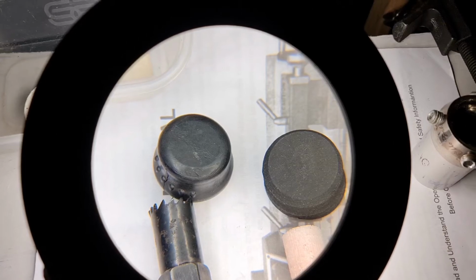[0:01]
If you watched my previous video, part one, on making a prosthetic replacement leg suspension part, you'll know that I did some 3D printing to replace some parts in a rotational and vertical suspension unit. Today, I'm going to use one of the parts I 3D printed for that unit in a different unit to see how what I'm doing affects the suspension. So if you watched part one, you'll be used to looking at things through my lighted magnifying glass.
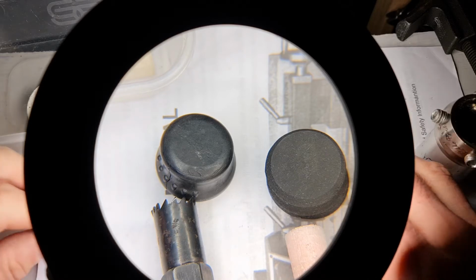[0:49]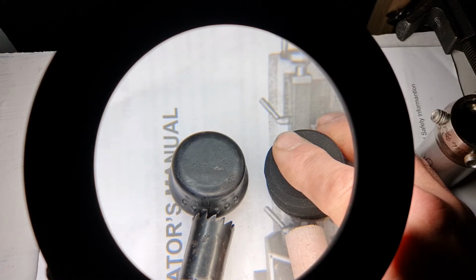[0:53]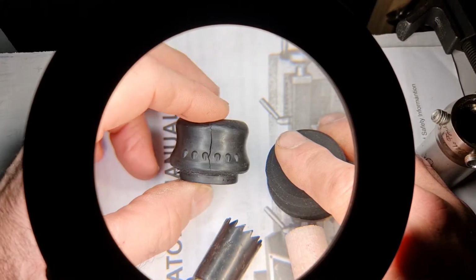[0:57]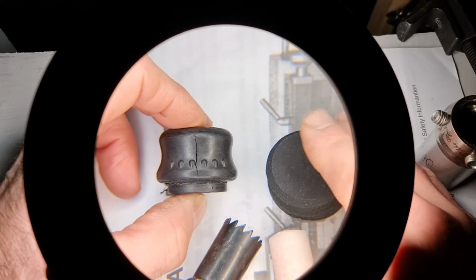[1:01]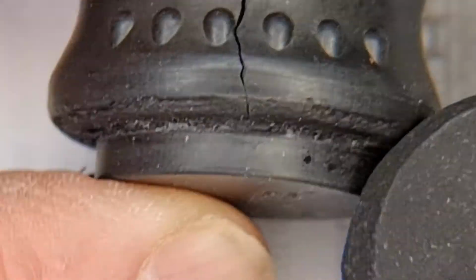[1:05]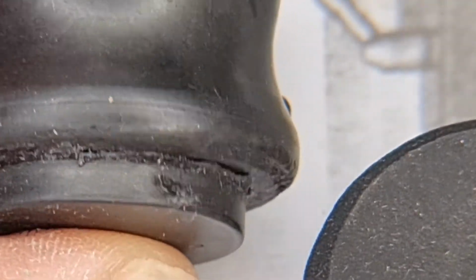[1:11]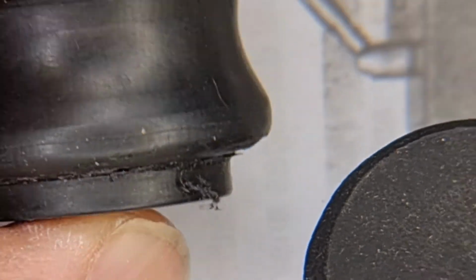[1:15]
So here we have the suspension unit that I'm going to replace. You'll see that there's quite a crack in there. So what's happened is obviously over time the rubber has worn. We'll do a close-up of that. You can see there's quite a big crack in there. Not too much other damage. There's a bit of damage here and there, just surface damage though.
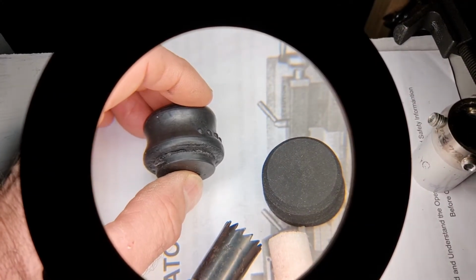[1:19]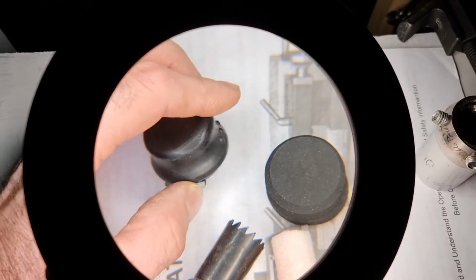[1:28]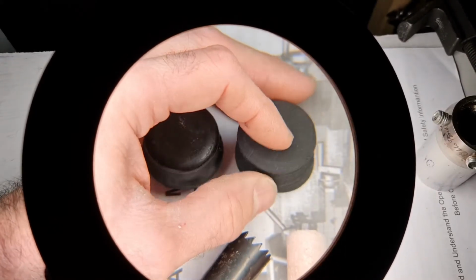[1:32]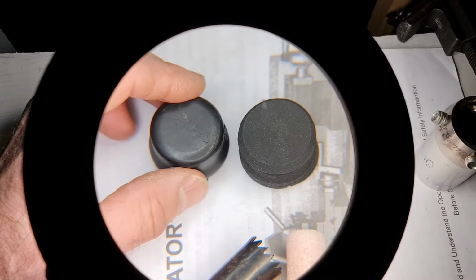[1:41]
So what we're going to do is use my new lathe that I've purchased, and I did a quick review video on. We're going to cut a new one of these rubber inserts out of some thick rubber that I've got off Amazon. This is the first prototype, which I'm just going to do some experiments with. I'm going to show you how I cut that out of the block. We'll just go over to my drill and do that.
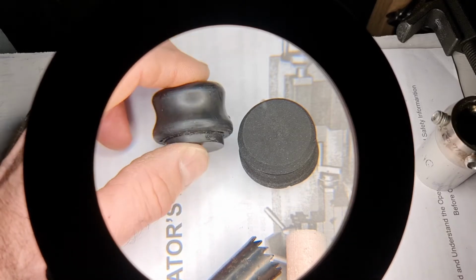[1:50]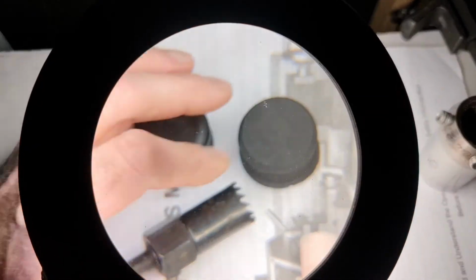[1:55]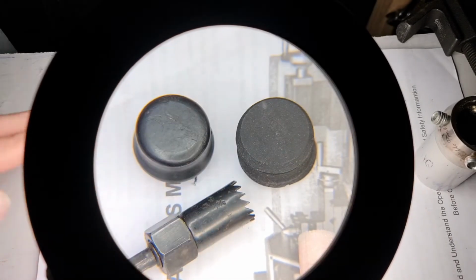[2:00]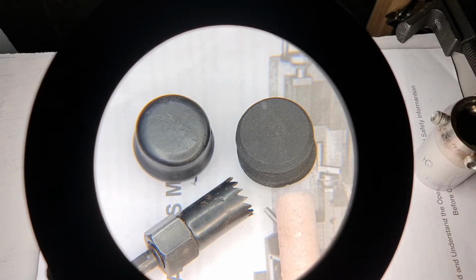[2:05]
Okay, so the idea is to replace this and do a few experiments. What I'm basically going to do is core drill the middle of one of these replacement rubber units and put in my suspension unit that I made in the last video using my 3D printer. That's got plastic on the outside, flexible plastic, NinjaFlex, and this particular one's got silicone inside as a damper unit, but I've actually decided to use caravan glue as a damper unit. On the previous video you'll see that.
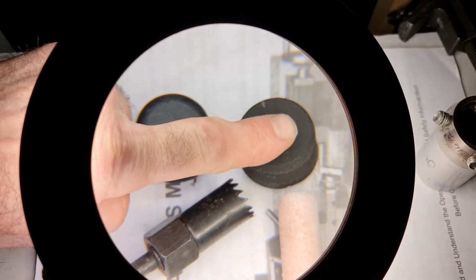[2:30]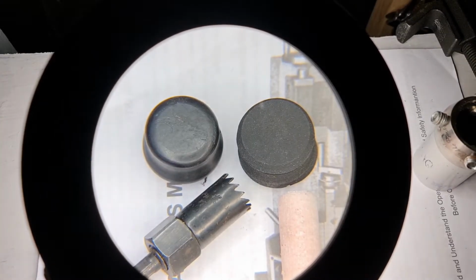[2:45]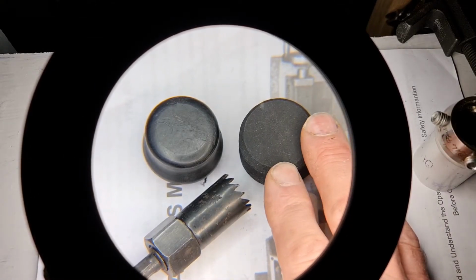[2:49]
So that's the plan, is to put the core drill through the middle of this. I think I'll go straight through so I get a full use of the suspension plastic suspension unit inside. And then I'm going to just seal that in probably with some more caravan glue and try it out. So first of all, I've got to obviously cut out another one of these, as I said. I'll do that on the drill now. I'll probably do two or three actually, since I'm there.
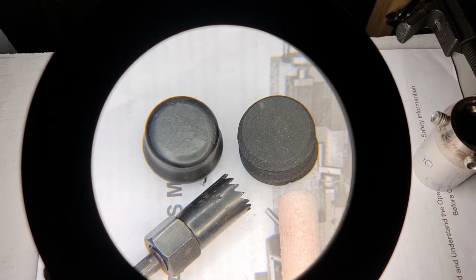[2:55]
I'm going to wear a face mask for all of this because the dust on this rubber apparently is not very good. It could be quite harmful, I think, with prolonged exposure. And I will be creating some dust both on the lathe and on the drill, so I will be wearing my mask, and a good one.
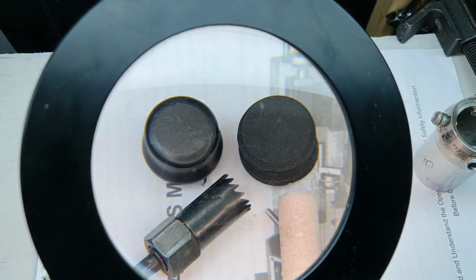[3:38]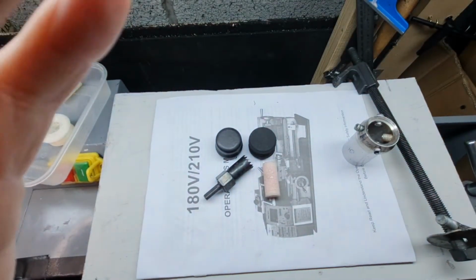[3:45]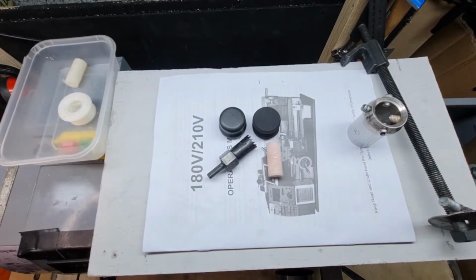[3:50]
Okay, so those of you that watched my lathe video, you'll remember that I found for the chuck guard there was a peg that came out, and I was going to remove that, but I've actually found a use for it. I'll just show you. So this is now my little lathe table that I've got on top of the lathe for YouTube, so I don't have to mess about and go elsewhere. Nice little table here. I can just do my shots on.
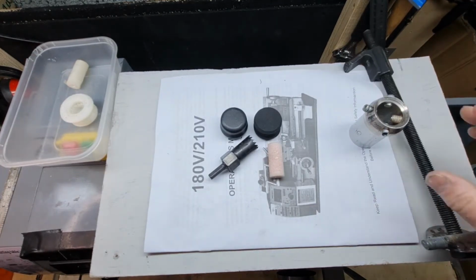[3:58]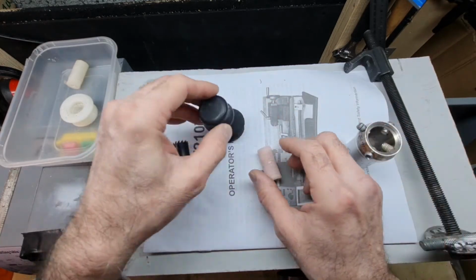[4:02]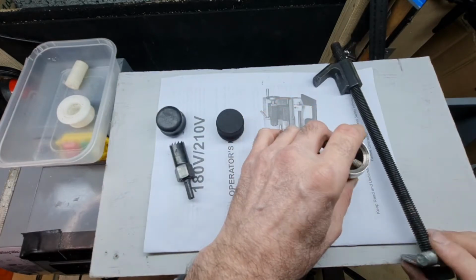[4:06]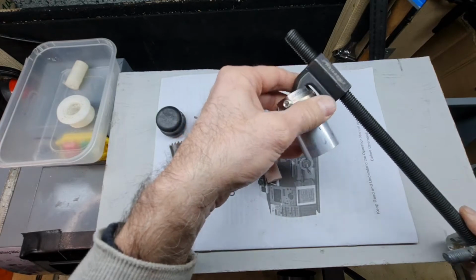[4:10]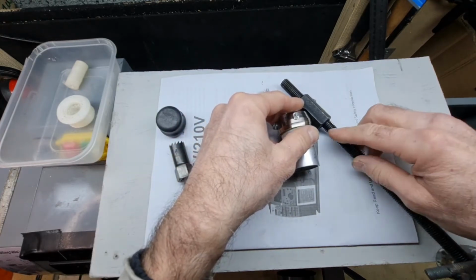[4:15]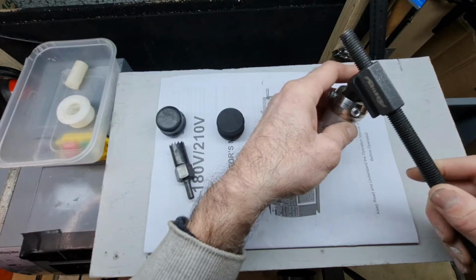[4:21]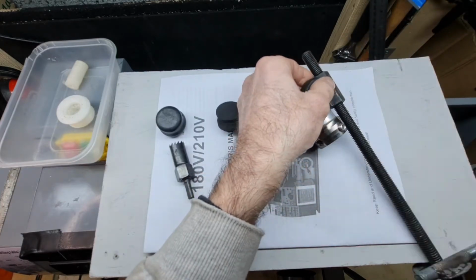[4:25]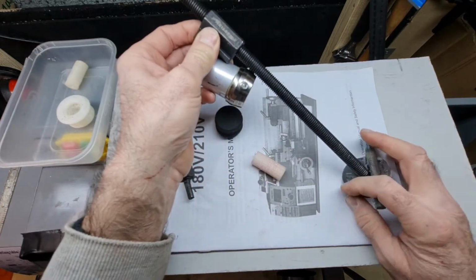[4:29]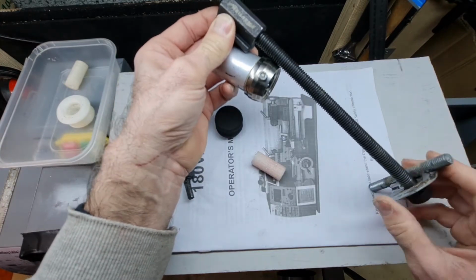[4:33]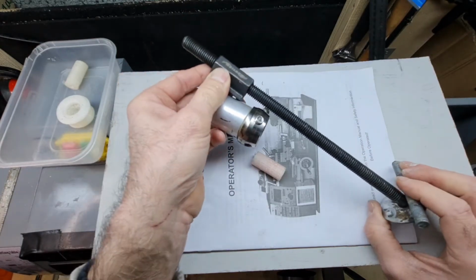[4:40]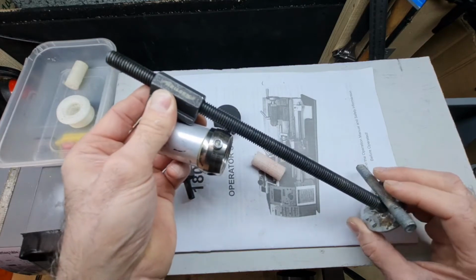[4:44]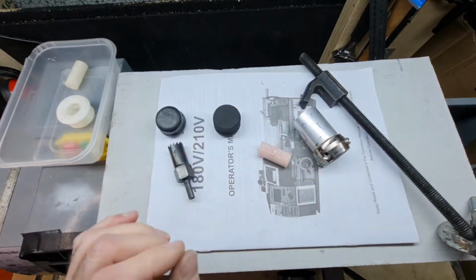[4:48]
So I'll just show you what I had to do, if anybody's interested, to get this suspension unit out of the prosthetic foot that I'm working on. I had to make up a special tool. This is basically all off eBay. Everything's off eBay. This is a spring compressor, which luckily fitted into this top unit here, which I fitted onto the foot, and I welded on a shaped washer here and a bar which fits on the other part of the shoe and foot, and I can just basically wind in and get the compression that's required from a special tool, which of course I don't have, I can't get for any price, so I've had to make my own up. Anyway, that's how I got that suspension unit out.
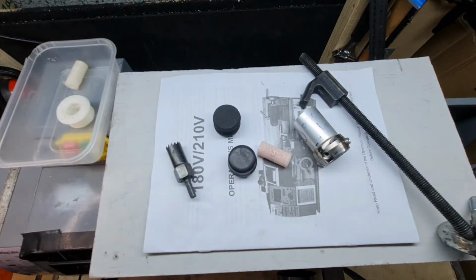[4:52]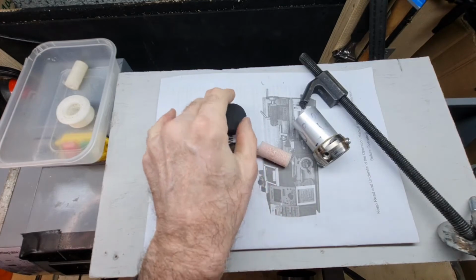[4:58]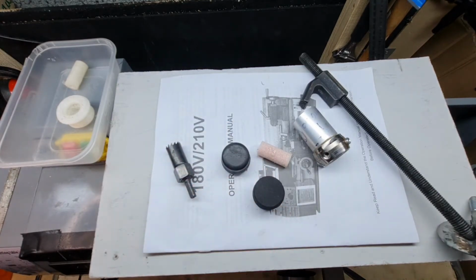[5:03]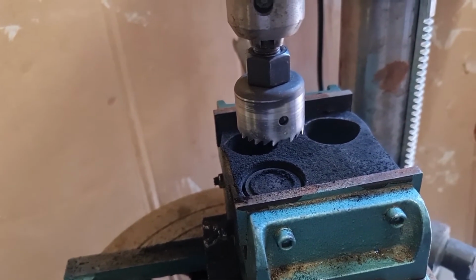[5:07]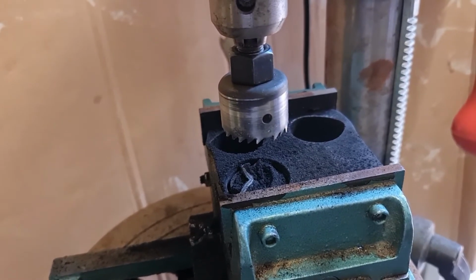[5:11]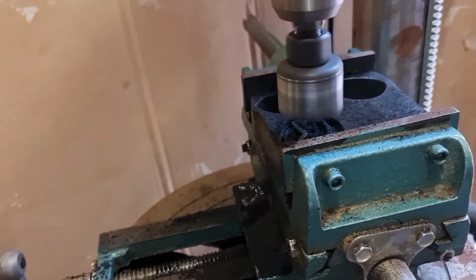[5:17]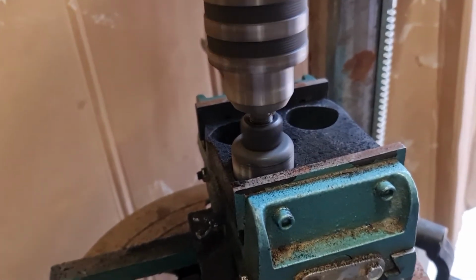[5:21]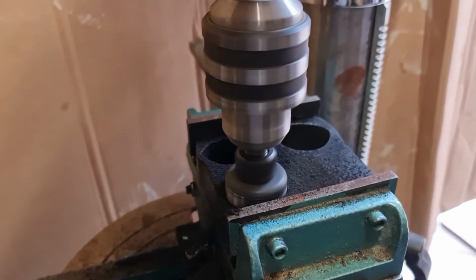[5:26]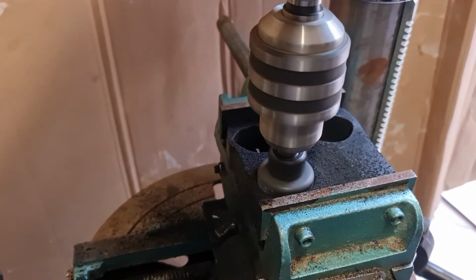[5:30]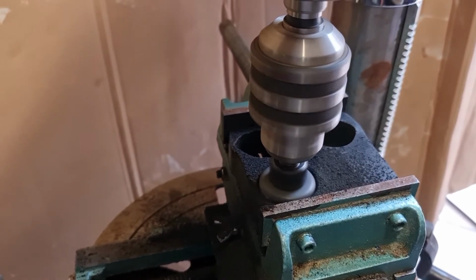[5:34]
Okay, so what we'll do next is we'll go to the drill and start core drilling some more of these practice units and final units out. As you can hear, I've got my mask on. I'm just started cutting a new billet out of this rubber block I got from eBay, so we'll just carry on with that. I'm doing it nice and slowly so the rubber doesn't burn or distort. Just very slowly, waiting for it to hit bottom.
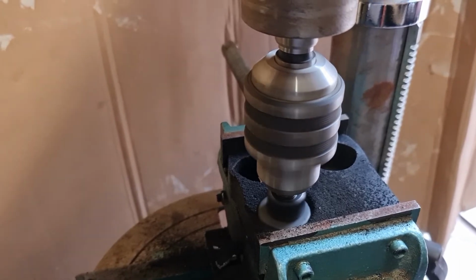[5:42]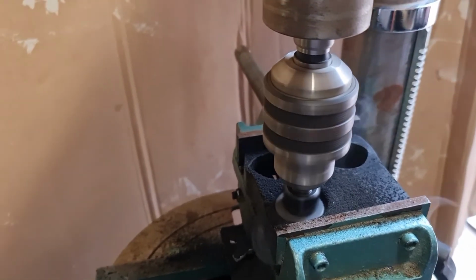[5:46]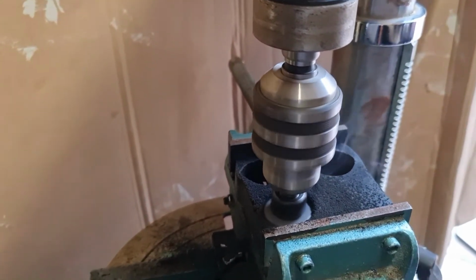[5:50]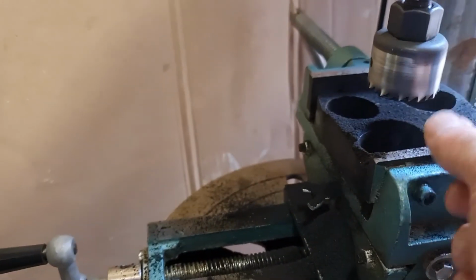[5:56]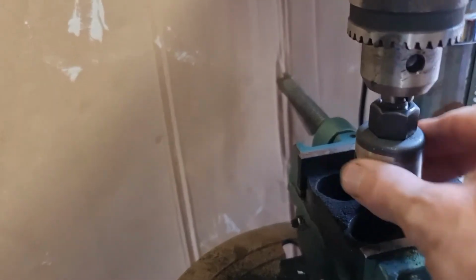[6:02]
Okay, that's it, we've hit bottom. A little bit of smoke is going out of the door. Okay, we'll come back up and switch off. So obviously the billet is now, because I've got a good clean separation, it's gone up into the hole.
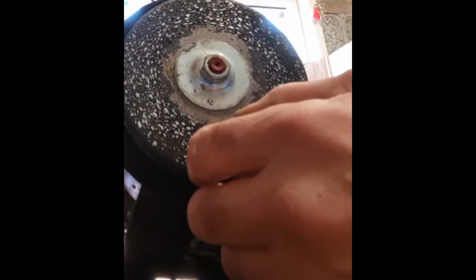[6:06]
I've just chamfered some of this off. I'm just going to chamfer a bit more off on the bench grinder because that's the easiest way for me to do this. So I've got a nice chamfer there now, which matches the original more or less. Didn't have to be totally accurate for this case. As long as I've got some chamfer, that'll be okay.
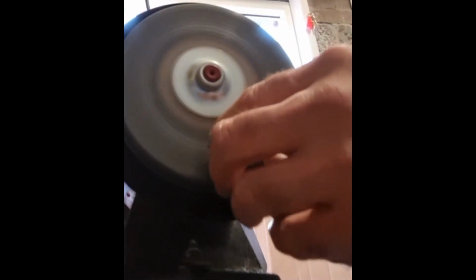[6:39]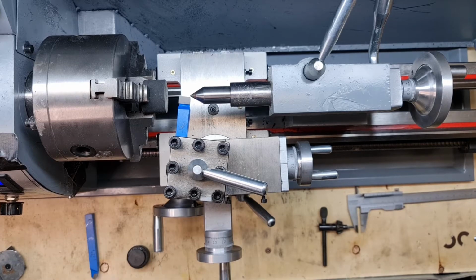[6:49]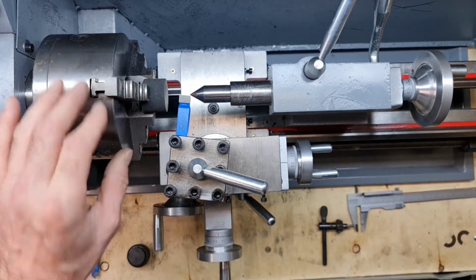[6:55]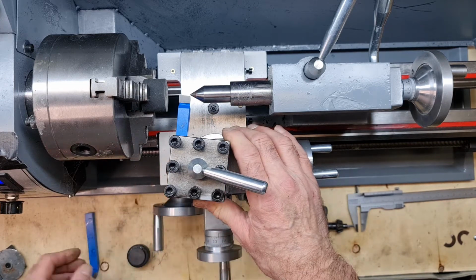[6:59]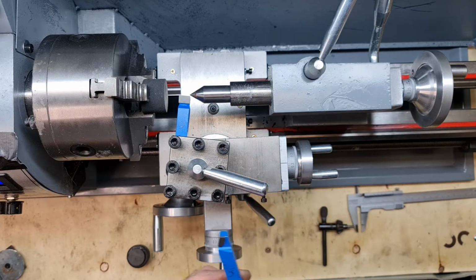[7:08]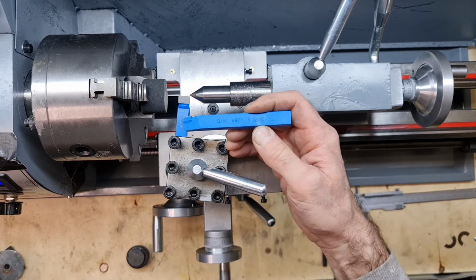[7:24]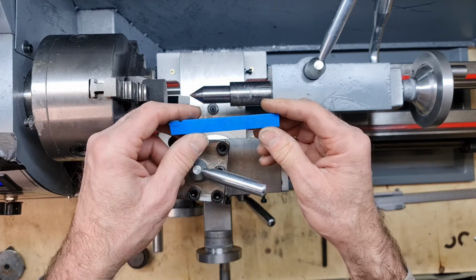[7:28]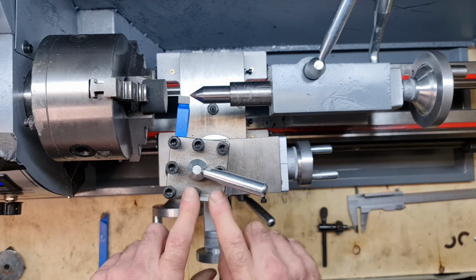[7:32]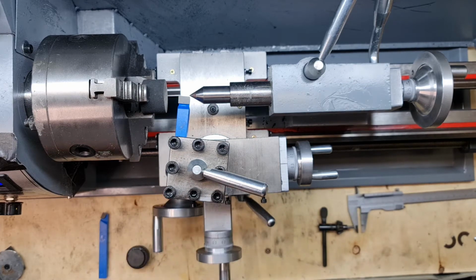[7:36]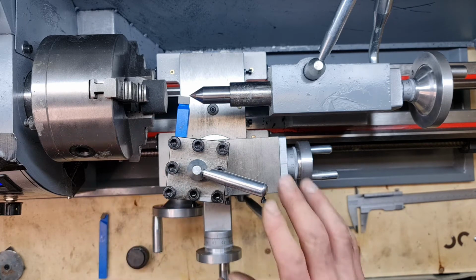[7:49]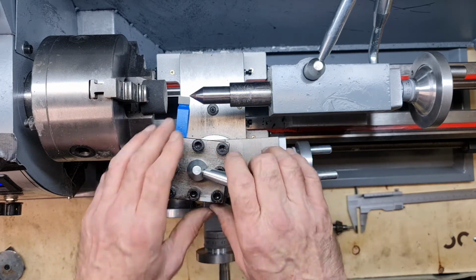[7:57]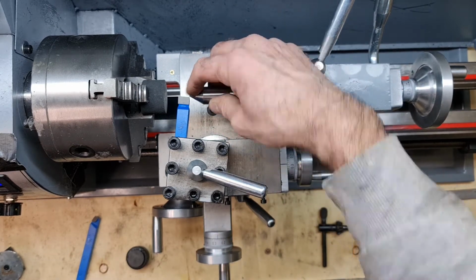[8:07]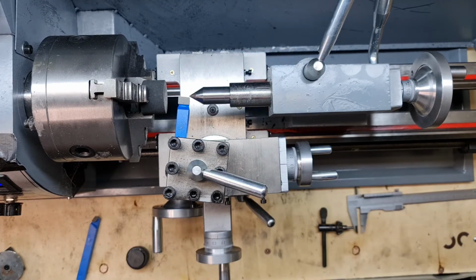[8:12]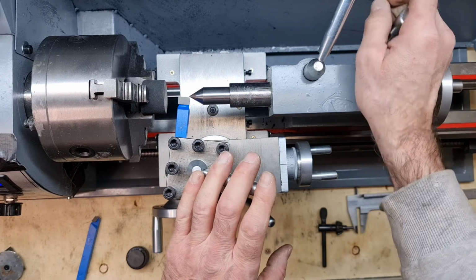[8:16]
So basically, I've had to go up now, reshim. I had to cut some new shims. So I'm now, as opposed to, I think I was just under a millimeter, 0.8 with the previous replaceable tipped tools, I've had to go up to 1.25 of a shim to put these tools in. So if you've got the standard tool post, you'll need to be looking roughly to shim around that distance to get your tool on point and at the right height. So that looks pretty spot on to the middle to me. I'm not going to get any closer than that, so that'll have to do, but it's pretty close, if not right on.
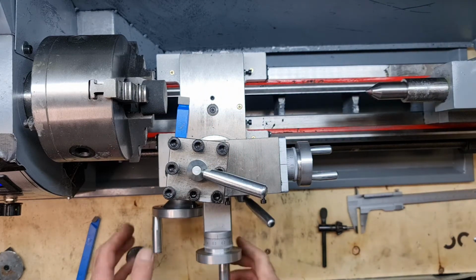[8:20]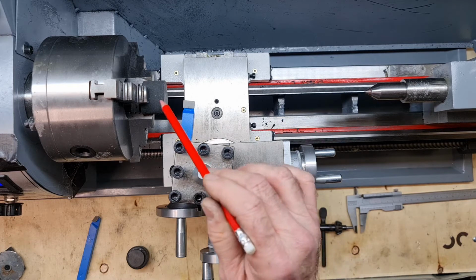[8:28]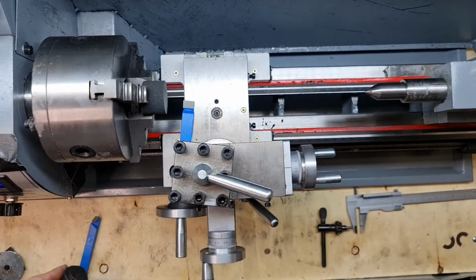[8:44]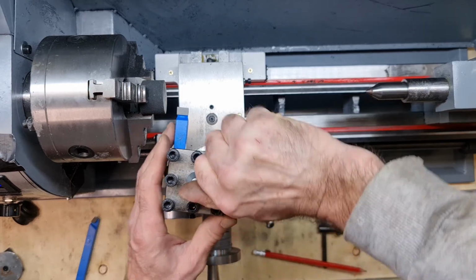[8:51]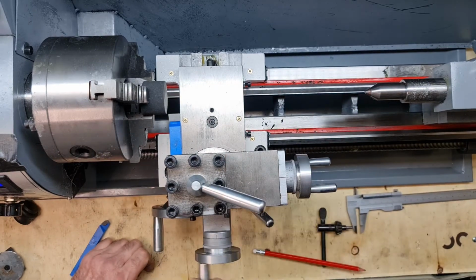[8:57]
So we'll just take the headstock away, and I've worked out that I've got to cut this. The diameter of the billet is 33.5, and the diameter of the insert that I want that goes into the suspension unit to hold it in under pressure is 25 mil. So I've got to cut 8.5 mil into this block. Now I'm not going to do that from just the dials, because I've not used these dials before. So I don't exactly know how accurate they are. So what I'm going to do is just start off, and I'll just measure when I think I'm getting close to that.
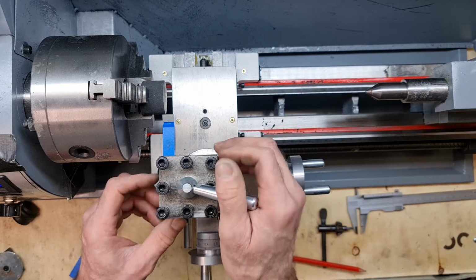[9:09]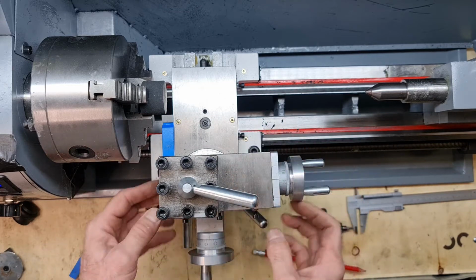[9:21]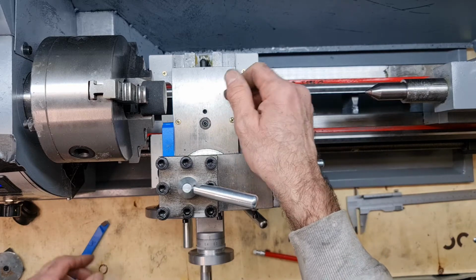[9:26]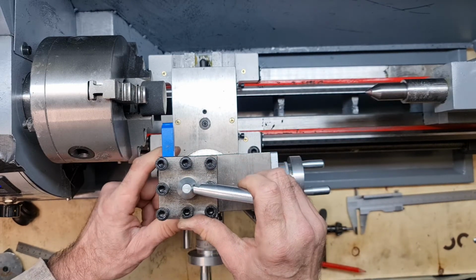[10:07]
So as you can see, I'll just explain what I've done with the tool here. I'm basically eyeballing this, because I haven't quite got the crosslide level. And in any case, I'll just show you what I did notice: I think the zero on this base is actually way off centre here, so I'm not quite sure what the point of that is. If I just get the ruler down there, I think you can see it's not really anywhere near the centre, so that dial there is a complete waste of space. So it's all going to have to be eyeballed, unless I work out a different way to do this. This side's fairly flat here. So I'm just going to eyeball this because the tool's not straight, because the cross slide's not straight. So anyway, that looks about right to me.
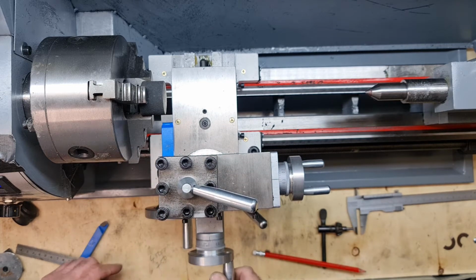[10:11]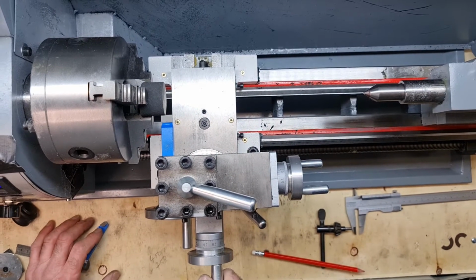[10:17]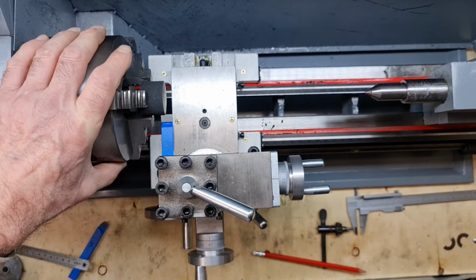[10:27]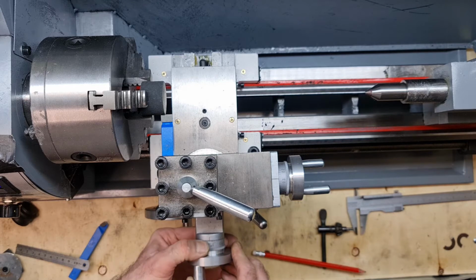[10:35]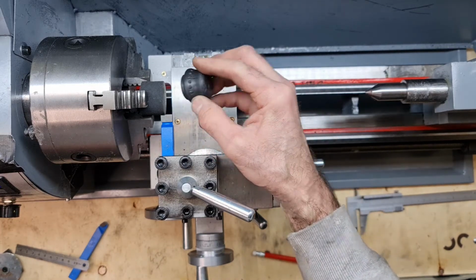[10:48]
You've probably got a better view than me. I think that's about right. We'll try that anyway, see how that goes. So I'll reset this, for what it's worth, to zero, so I've got some idea of where I'm going. Okay, so that's about right now. I'll just check everything's tight. Just check that we've got the right depth there. That is
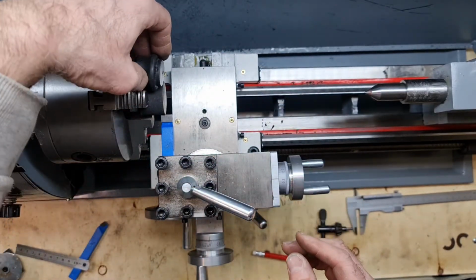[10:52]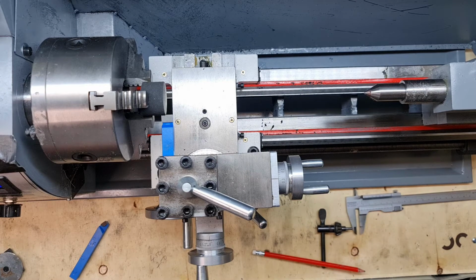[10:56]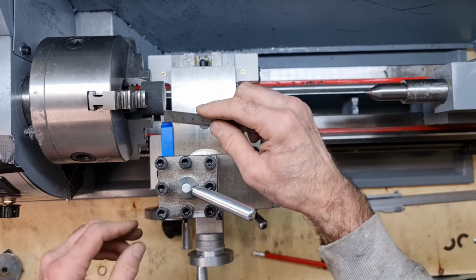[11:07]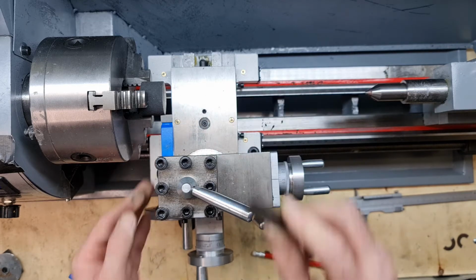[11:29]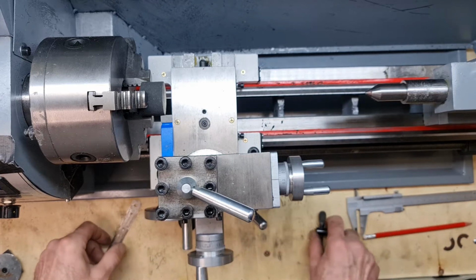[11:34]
That's 4 mil actually, so we'll just check on here. Actually, yeah, that's spot on. Good eyeballing, I think. More or less, but yeah, I would say that's spot on, actually. So we'll stick at that. I'll just get rid of this tool, get rid of all unnecessary bits out of the way. Okay, so we'll see. We'll start to roll and see what happens.
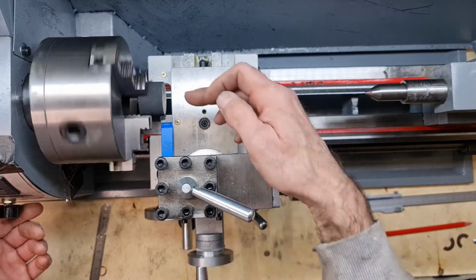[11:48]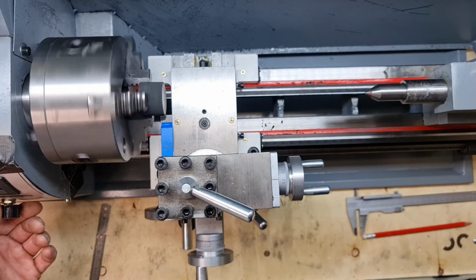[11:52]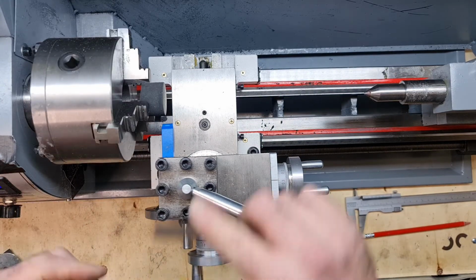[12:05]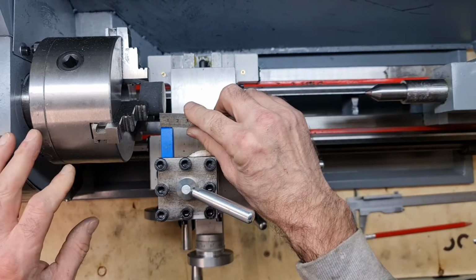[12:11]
Okay, so obviously I've put this billet in. Now the problem with the billet is it's quite difficult to get it in straight, but I think I've done a reasonable job. It doesn't have to be 100% accurate, this, so we'll just go back out a bit and I'll stop it, just check that is 4 mil there. Now I can see it.
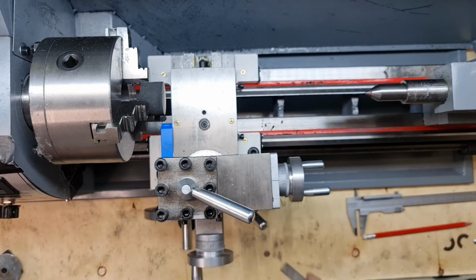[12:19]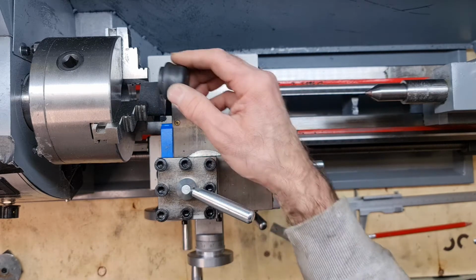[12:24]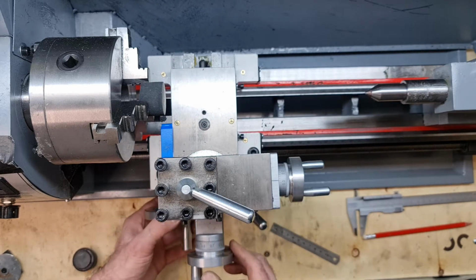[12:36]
That's 4 mil, so we're okay, more or less 4 mil. Double check it on this as well. I'd say that's more or less spot on. I could get away with slightly less rather than slightly more, so I might just turn it back a fraction. Okay, we'll go with that.
So I'll just go back out to where we were. So I've gone in one. That's 1 millimeter I went in. 2 millimeters. Okay, so we'll start at 3 millimeters. So my speed is about 450 revs, about 500. So we'll go with that and just gently
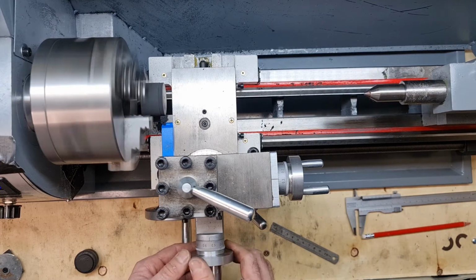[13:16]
in. You can see I've got the tool quite a long way out. That's 1 millimeter, because I'm not too concerned about the rubber offering too much resistance to the tool being right out, and it's also kept the tool post well away from the chuck as well, so I'm not too concerned about that. So that's just feeding in fairly slowly here. It's another millimeter.
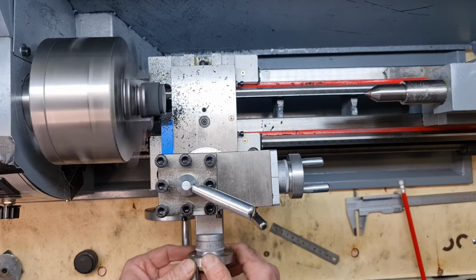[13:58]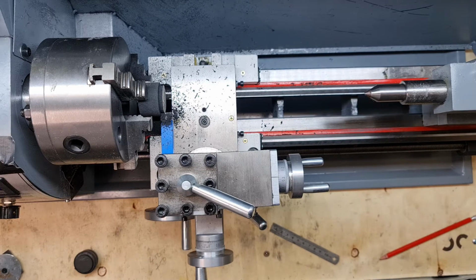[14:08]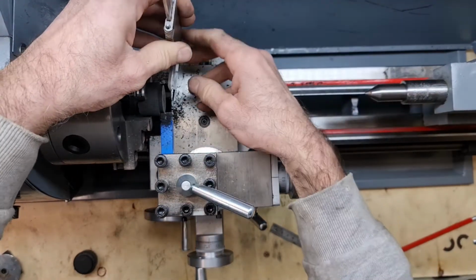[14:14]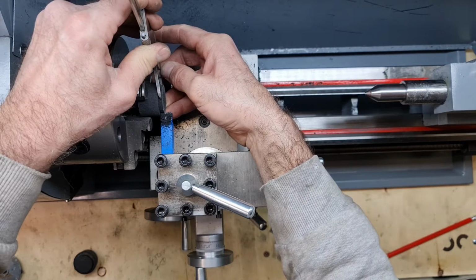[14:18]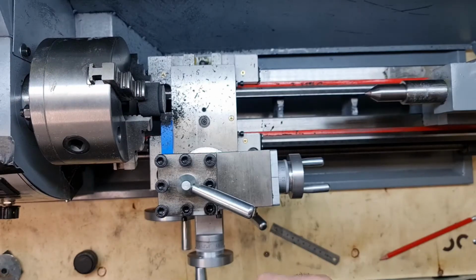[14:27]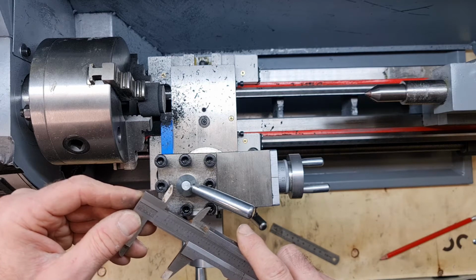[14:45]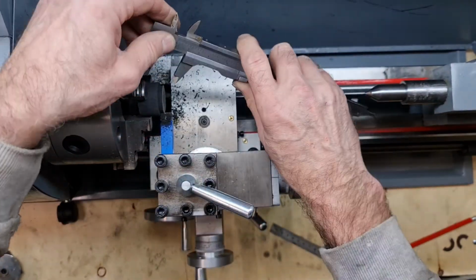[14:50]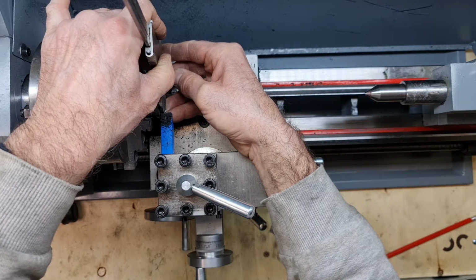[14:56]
Okay, I'm just going to stop there for a minute and double check that we've got the right measurements in. So let's have a quick look here. I think we're way out yet, but I just want to make sure. I think I've gone 6 mil, but we'll have a look. So what are we at? 30. Oh, right. I think I had the wrong setting. Let's try and get this. Yep, there we go. Oh, that's better.
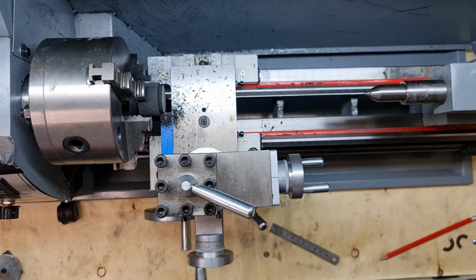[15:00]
Okay, let's try that. That didn't seem right. Okay, so we're down to 25.67, and we want to be at 25. So basically, we've got another 2mm to go. So that's on zero. I'll start up again at around 500. I'm not burning the rubber, so we'll go one more millimetre and see what that comes out at.
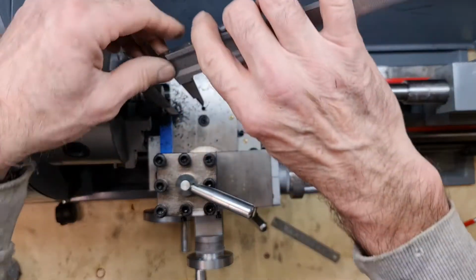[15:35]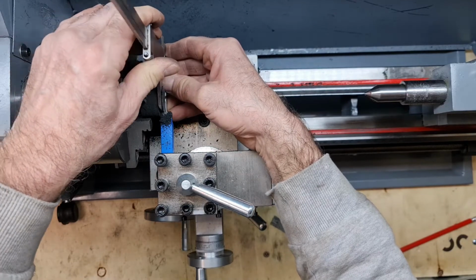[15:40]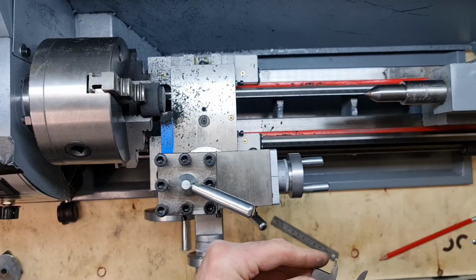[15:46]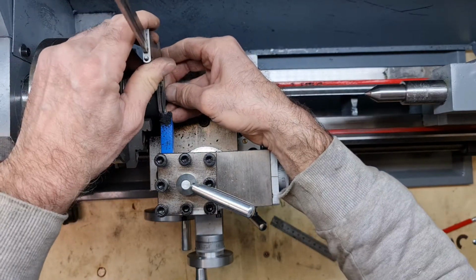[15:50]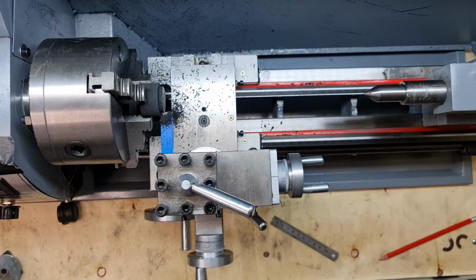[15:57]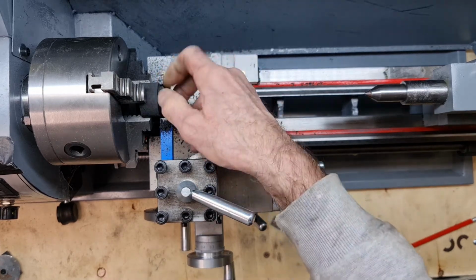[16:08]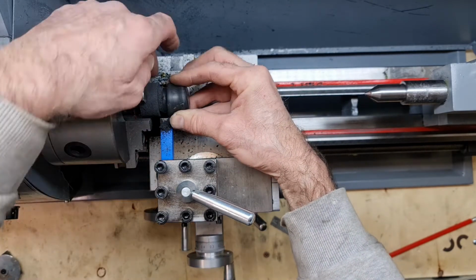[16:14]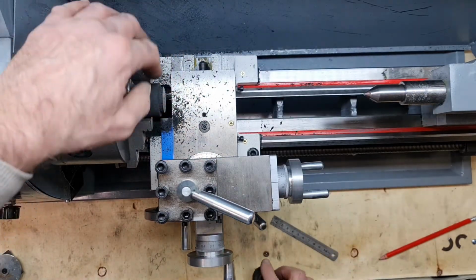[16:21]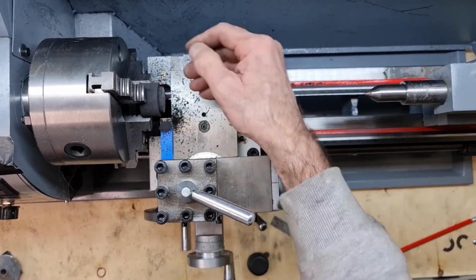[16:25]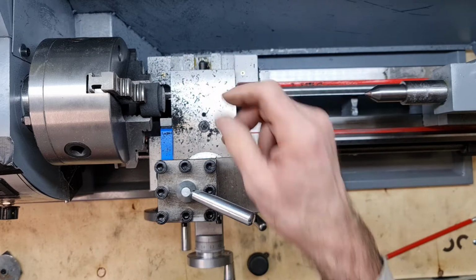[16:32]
On the gauge. So hopefully if this dial is anywhere accurate, this should be 26mm. Oh, 25, okay. Right, we'll stop there. Okay, well, that looks about right. It doesn't have to be exactly right, but that's good enough, I think. By the time I've got rid of this rough, I might gently file it down. And then, yeah, I think it'll be 25 easily.
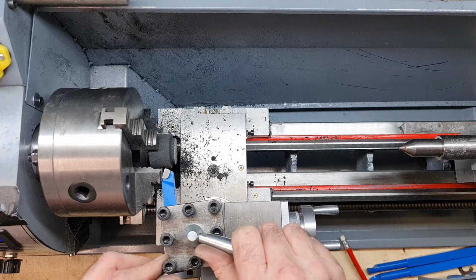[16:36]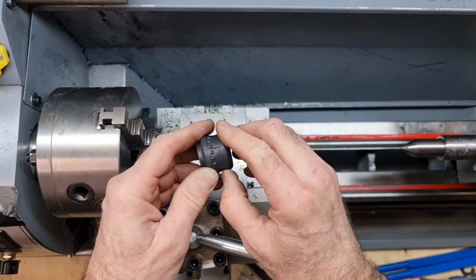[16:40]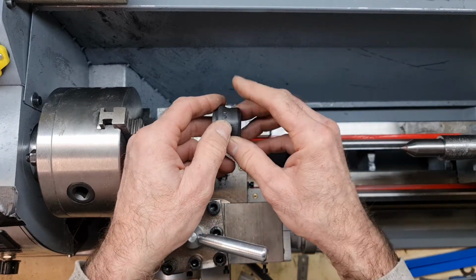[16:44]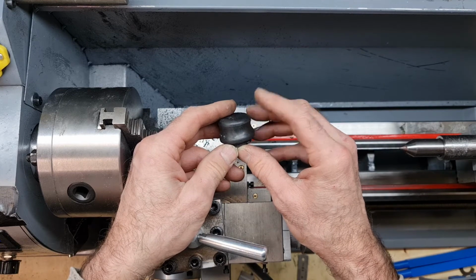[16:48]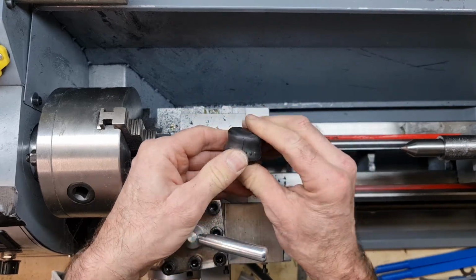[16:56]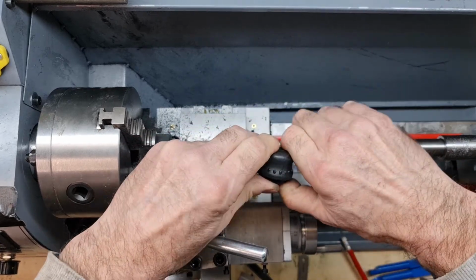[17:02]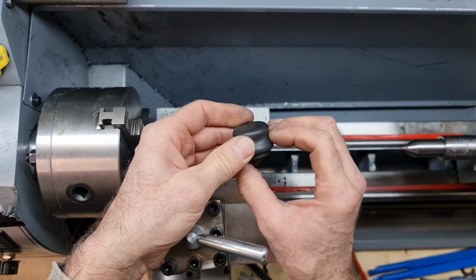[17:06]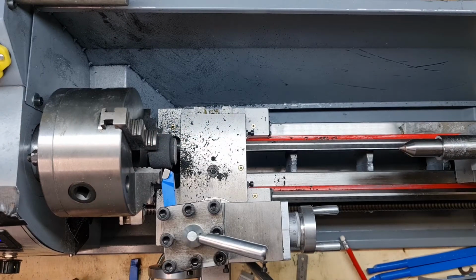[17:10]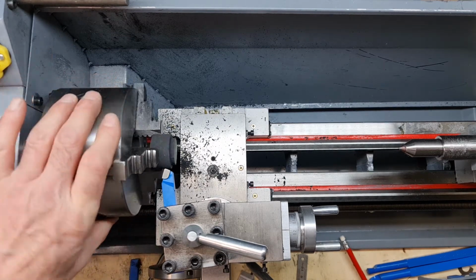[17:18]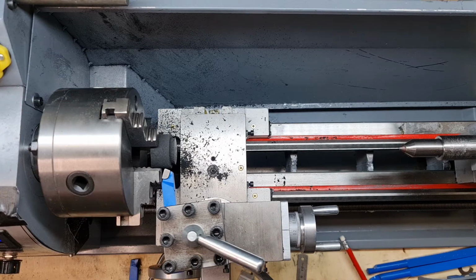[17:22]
What I'm going to attempt to do now, having changed the tool, is to recreate this shape here. That's the front again. So I need to create something similar to this shape, this concave shape, because what happens is the foot pivots on this. So I think the idea is there's a give on each side to allow the foot to pivot from side to side, so hence why there's that concave shape cut in. So I'm just going to cut forwards a concave shape as close to the chuck as I can get, which is that close, and then I'm going to undo the piece, turn it away, and do most of the other shaping from the other side where I can get a bit more grip.
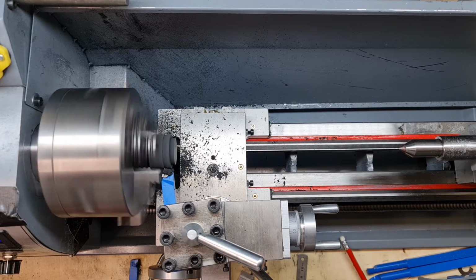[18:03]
So very carefully I'll start off going back up to around 500 revs, just gently start the concave shape in there. I don't really know, I'm just going to go in by eye. Most of this is done by eye, as you can see. So that looks to be a good start. I think I will stop there now. Just come as far over as I dare. That's as far over as I dare, because you could hear the chuck there. So that's fine. We'll leave that there. We'll come out and switch off.
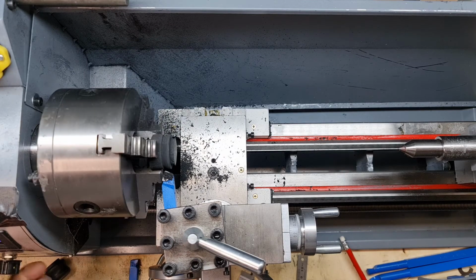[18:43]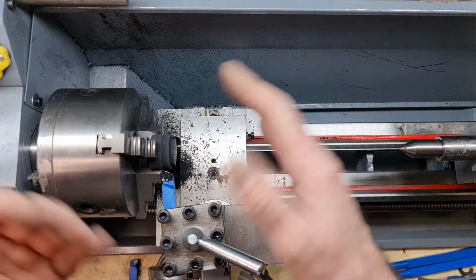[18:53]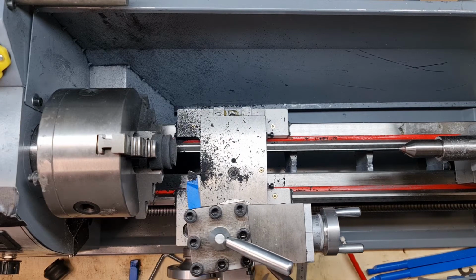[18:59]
Now, by the way, yes, I noticed that also happens when I switch off from high speed. Sometimes the motor keeps going. Anyway, it's gone back to zero. And obviously, good practice would demand that you switch off the lathe every time you go near it. Certainly when you put the chuck key in. Which I must admit I don't do all the time, but I have this time because it did that overrun business.
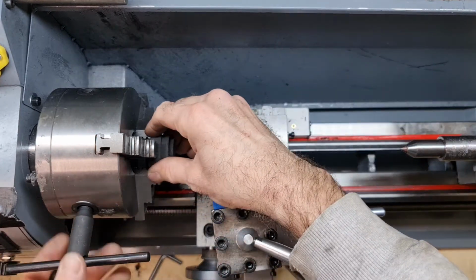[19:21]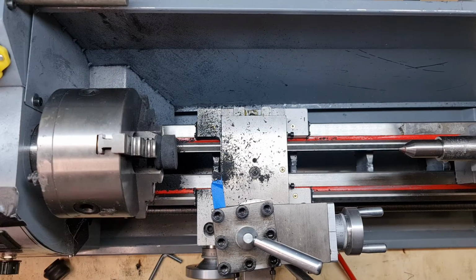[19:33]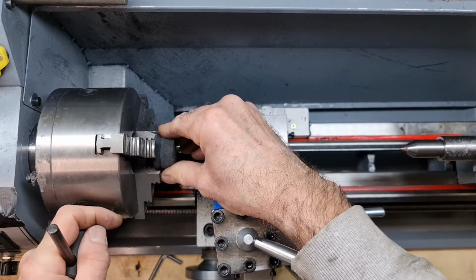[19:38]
So anyway, I'm just clearing off some tools here because I left them in the way. Okay, so because I'm putting the chuck key in, I have actually switched the machine off. I'm just going to turn the work over, see what kind of grasp of it I can get in the chuck, because of course I don't want to over tighten this and crush the rubber, but I don't want to under tighten it either and have the thing come out.
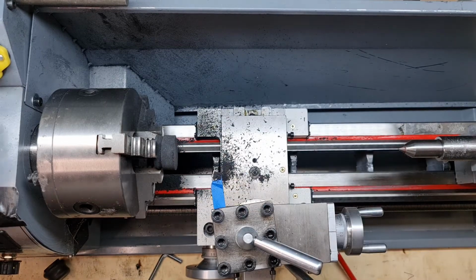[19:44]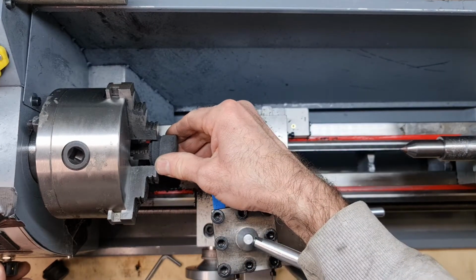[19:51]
So I can't be bothered measuring, so I'm just going to do it by eye, which is very difficult actually because I've got that chamfer on it as well. So I'll have to switch it off again because I've just said about switching it off when the chuck key's in.
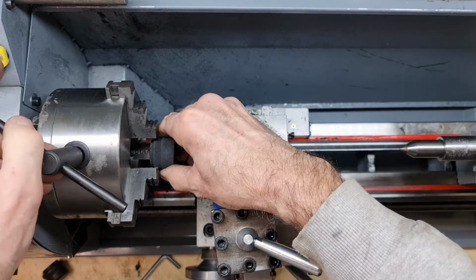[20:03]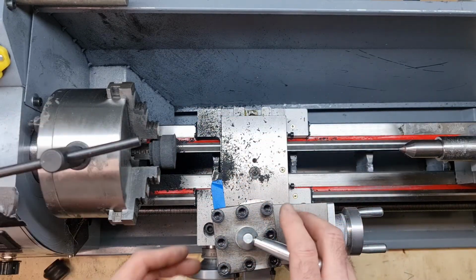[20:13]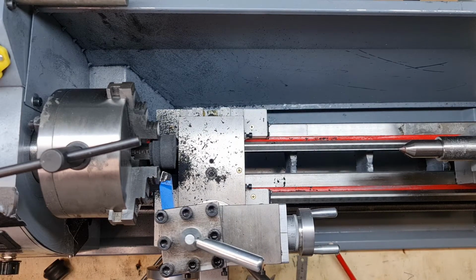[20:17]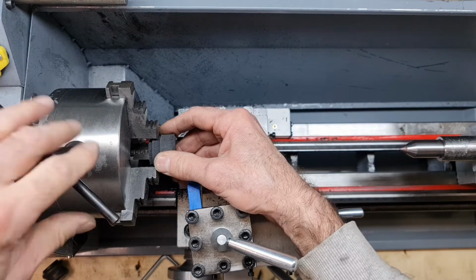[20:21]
Okay, that's the first thing I was taught on my engineering course 40 odd years ago. That might be better, but I'm just gonna be careful. That's not gonna quite make it, so I'd rather do all this in one. I'm just gonna have to bring out the piece a bit further. Try and get it into this chuck.
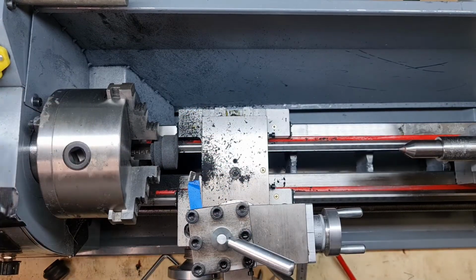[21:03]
This is not gonna be easy, but then again, this is rubber, and one of the reasons I'm doing rubber to start off with is just to get back into the swing of using a lathe, because as I said in my review video, I think it's probably close to 20 years I haven't used a lathe, so it's quite a long time. So I'm just refamiliarizing myself with the procedures. There we go. Well, I don't know, we'll have to have a look at that.
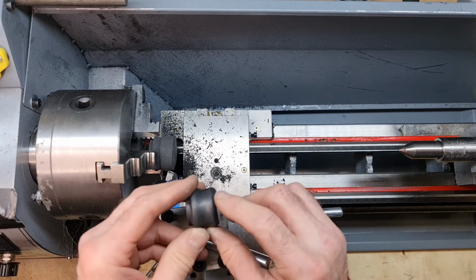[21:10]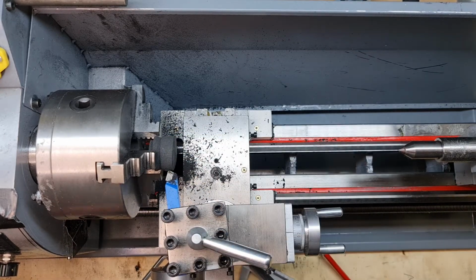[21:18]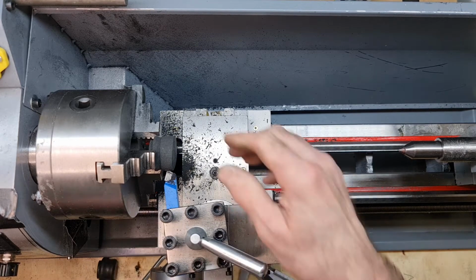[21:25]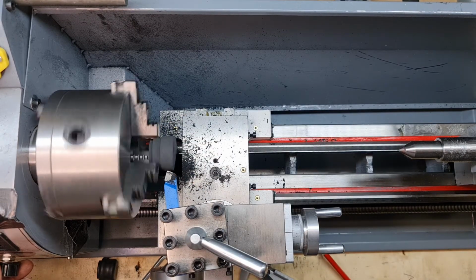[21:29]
And I'm just going to go over, because I see on the original there's a bit of extra meat on there, which hopefully is more or less how this will end up. So I'm just going to go in a bit more, because I just want to see how this works out once I start cutting it. Yeah, we're okay for the chuck. Just going to go back up to 500 again and very slowly start cutting in here, to roughly the same depth as is on the other side, which I shall eyeball.
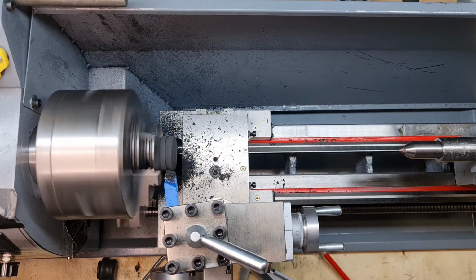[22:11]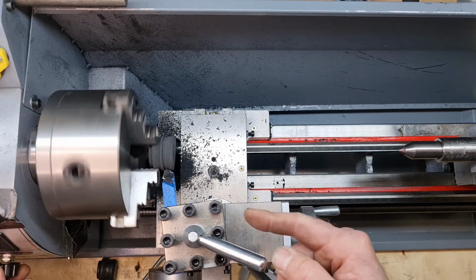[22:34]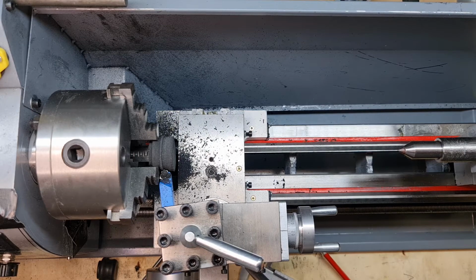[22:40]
Okay, yeah, that's about right, a bit more, and we're there. Okay, well, I'll maybe move this over a little bit, but I'm not going to get down there, so I'm going to have to change this bit. Okay, shut that off. Yeah, it's done it again, you see, it's got this overrun if I suddenly shut the lathe off, so I've got to remember to do that quite slowly. So I think we're going to come out here, just see what kind of, it's still reasonably accurate actually, considering.
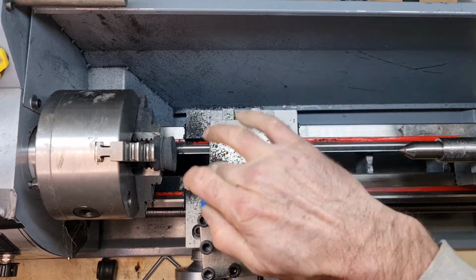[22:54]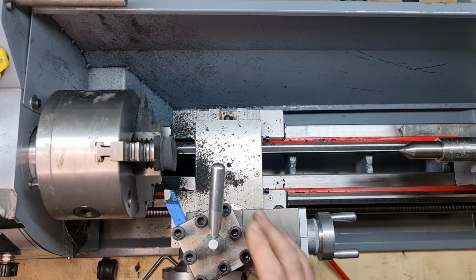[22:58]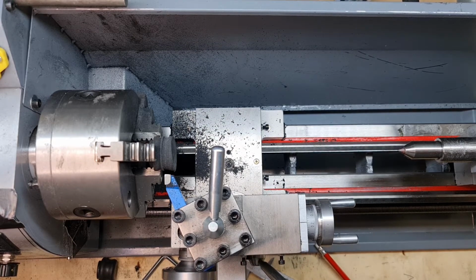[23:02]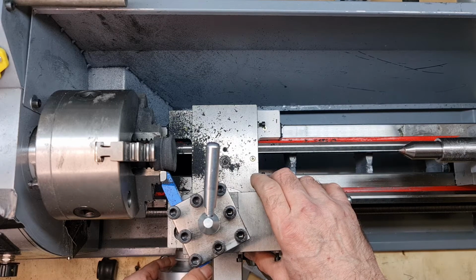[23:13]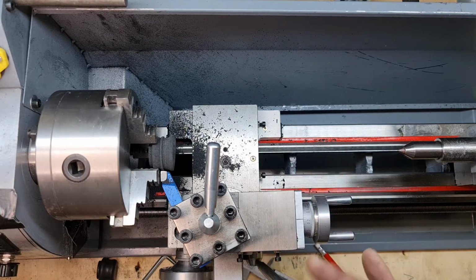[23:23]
So anyway, what I shall do now is just get the tool off into a different direction, so I'm hoping that I can now just get in there, finish off that chamfer cut, I should say. Okay, so we're very close to that chuck, but I'm just going to give myself some safety room and hopefully get this little lip out. So I'll start off again. Double check up. Got to tighten up the tool post. Thought so. Anyway, just as well I check that. Okay, so off we go again. Very carefully, to 500. Very carefully cut into there.
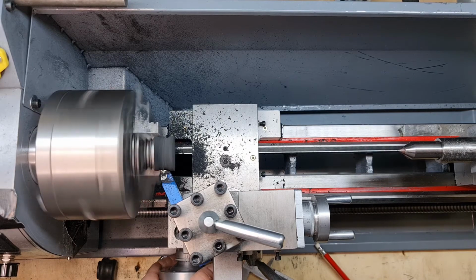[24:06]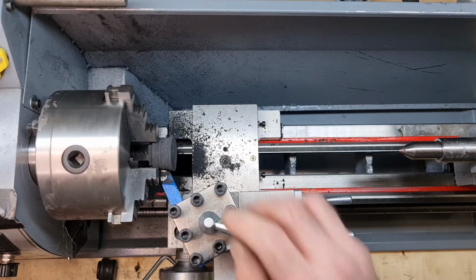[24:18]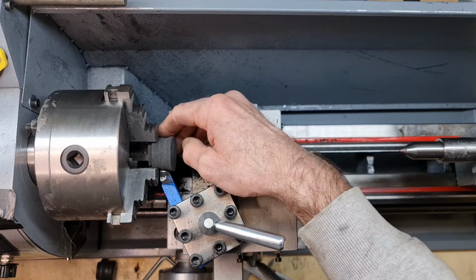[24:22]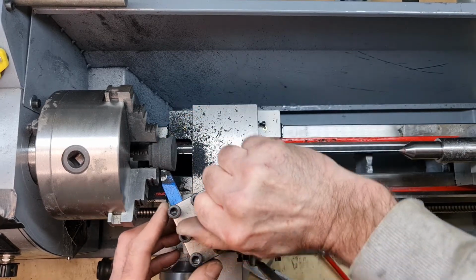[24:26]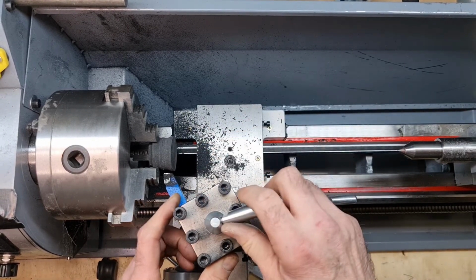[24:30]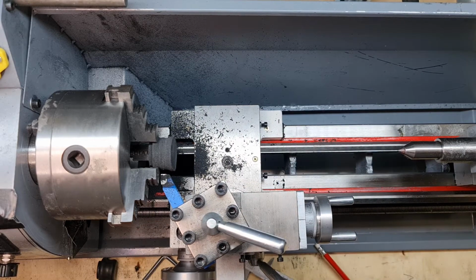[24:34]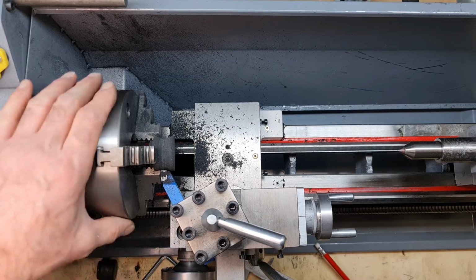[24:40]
I'm just going to turn the tool post very slightly. I think I didn't quite get a good enough edge there, so I'm just going to come back, check the chuck is clear. Try that again. Nearly there. Chuck is okay. I'm just going to go right up close. Chuck is still okay. Start on low revs just to make sure there isn't any chuck engagement with the tool. I'm just going to finish this off. There we go. That's it. You see, that's just going slightly more, I think.
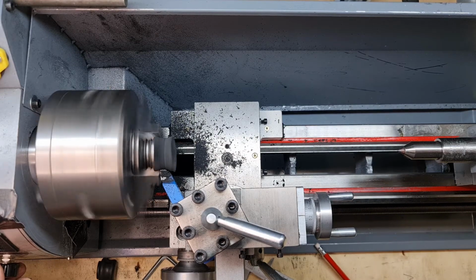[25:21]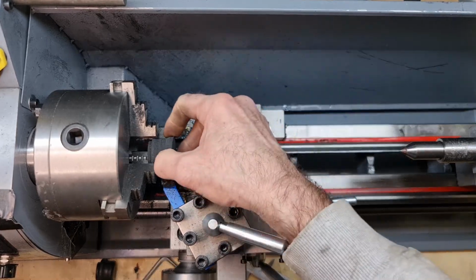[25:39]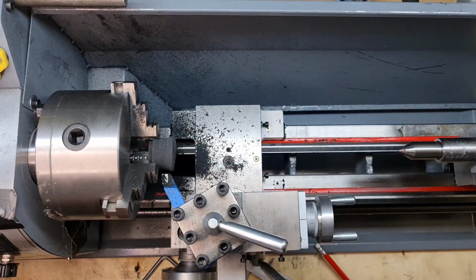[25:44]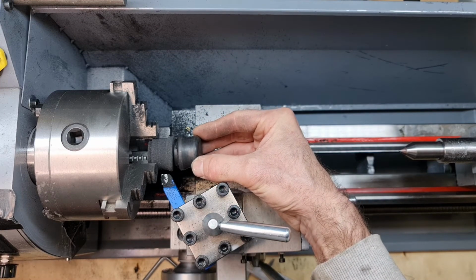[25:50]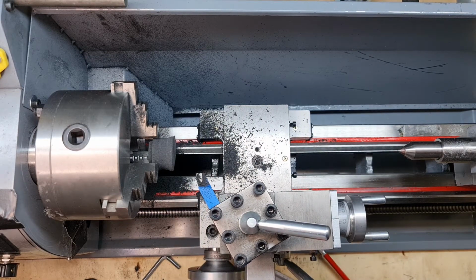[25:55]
Okay, that'll do. Well, I'm just going to come back slightly to that previous chamfer. Okay, that'll do. So yeah, we've got a nice little cut into there, which is roughly the same as that one. That's good enough for me. May not be good enough for you, but it's good enough for me.
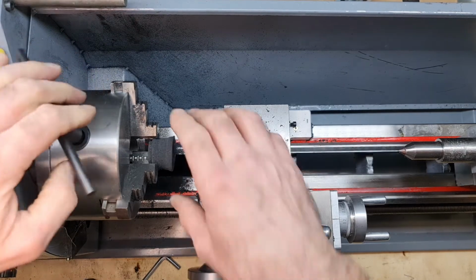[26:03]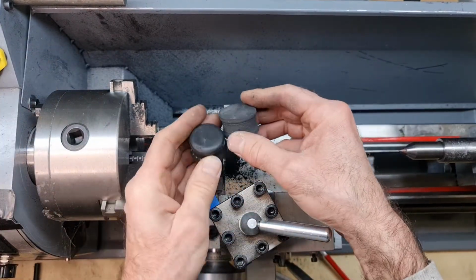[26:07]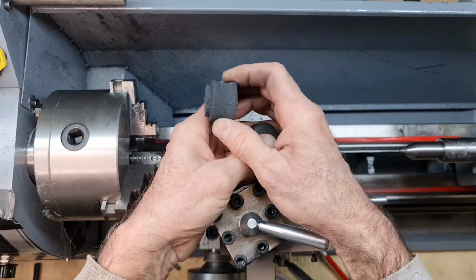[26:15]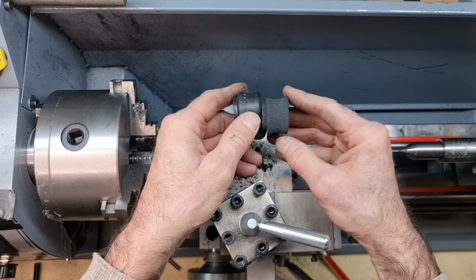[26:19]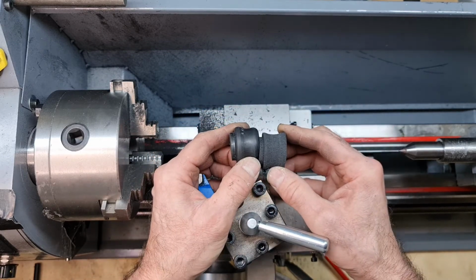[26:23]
Okay, so let's have a look. Switch this off. Do the appropriate health and safety this time. Get this out, get the billet out. Okay, so let's see what we've got. Well, a bit rough there at the top, but not too bad, I think, for a first proper effort. I've got the slope and the chamfer there, and I've got more or less the correct convex shape there. I notice it's slightly less at the top there than there is at the base.
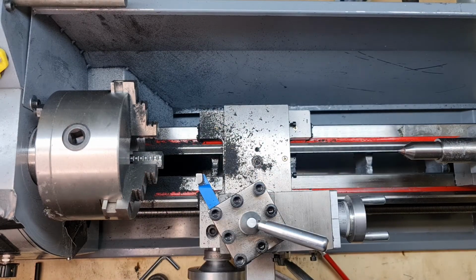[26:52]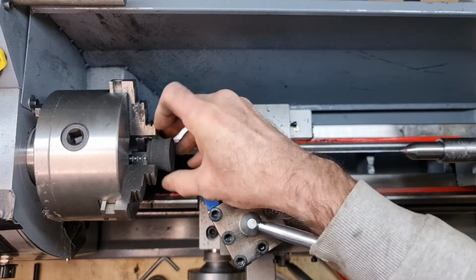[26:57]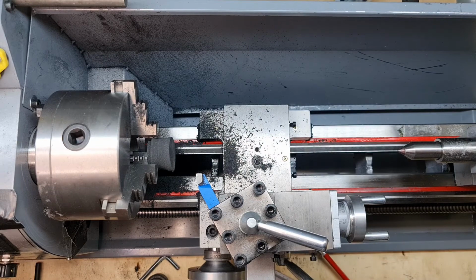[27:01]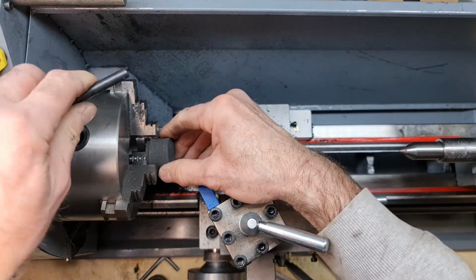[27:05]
So I don't know. I might just actually cut that down a little bit. Okay, I think I will cut that down very slightly, just so it matches the original, which means I've got to do this again.
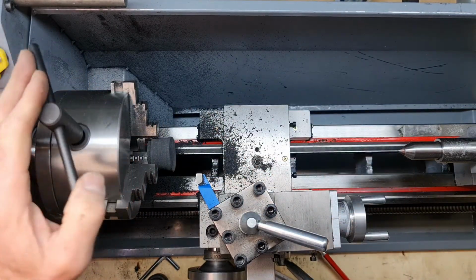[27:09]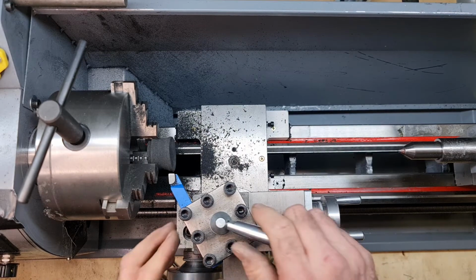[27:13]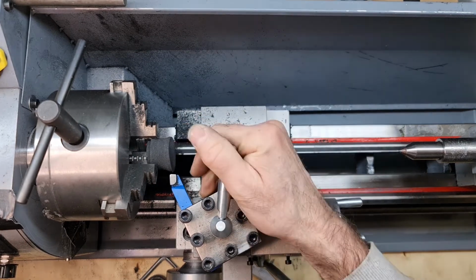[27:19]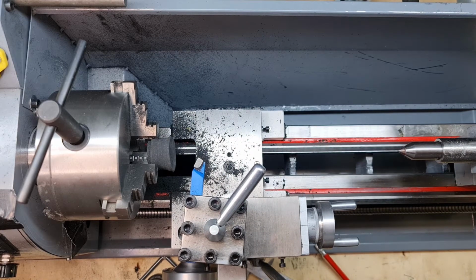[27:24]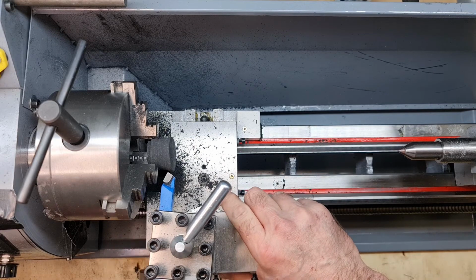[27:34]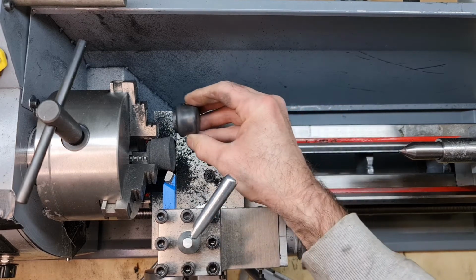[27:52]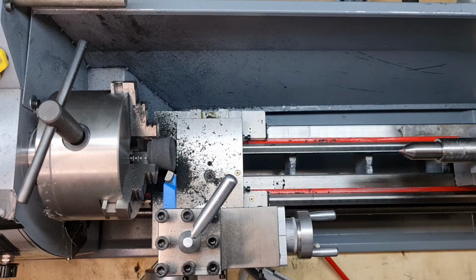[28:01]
With it switched off, so I think, yeah, just come out, go back into that shape there. So I'm cutting off a bit more than is at the bottom. I think I want to be about there, maybe slightly less of an angle, maybe that. Okay, yeah, I think that'll do it, just to get that slightly narrower at the top than the bottom, because that seems to be how we do it.
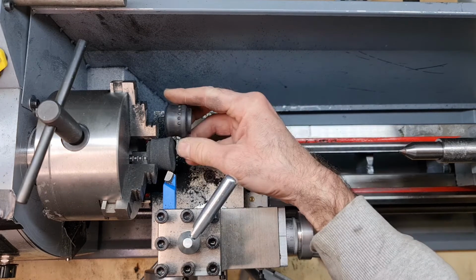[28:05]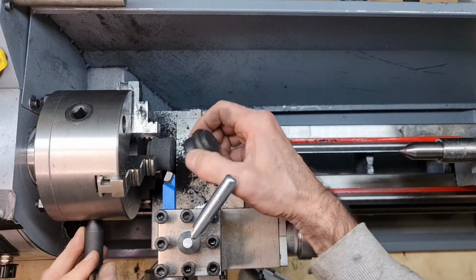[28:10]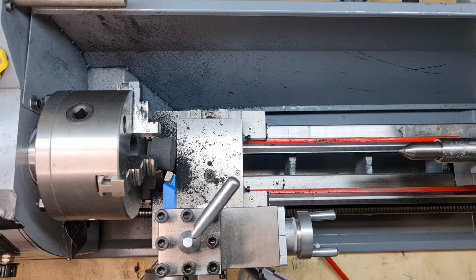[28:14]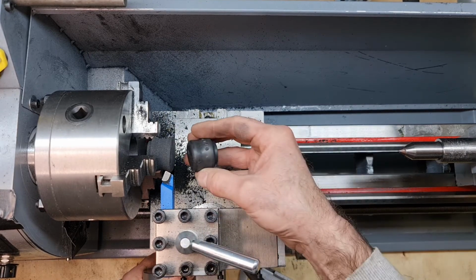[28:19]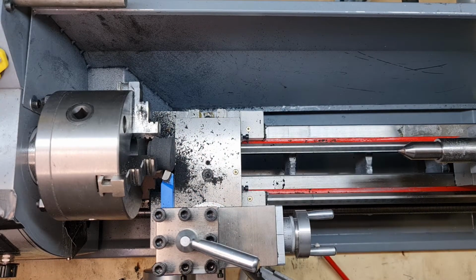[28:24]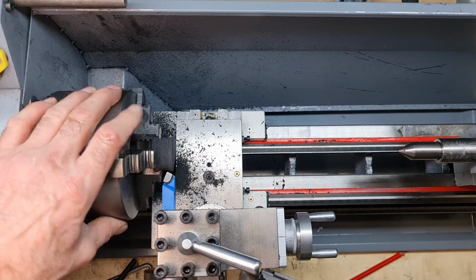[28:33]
And I'll just check how far we're going to have to go in there, because I don't want to slice off too much of this lip. Yeah, I'm going to go in a bit further over, actually. Just tighten the tool plate. Yeah, I'm going to, because I want to replicate that there is a lip there. So I think that'll do it. Okay, so we'll just go in. Check the tool post and check that I'm clear of the chuck, which I am.
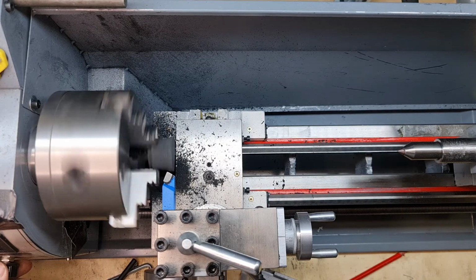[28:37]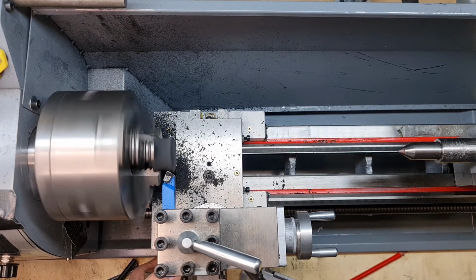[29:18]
So I'm just going to go in now, and I might use some sideways movement also. So we'll just very carefully cut that. Going to come out slightly as I go. Just go in again. So just very carefully. Just a bit more. I'll check it. See how we're doing.
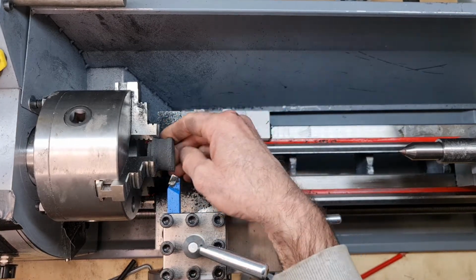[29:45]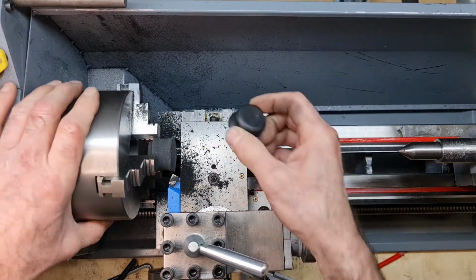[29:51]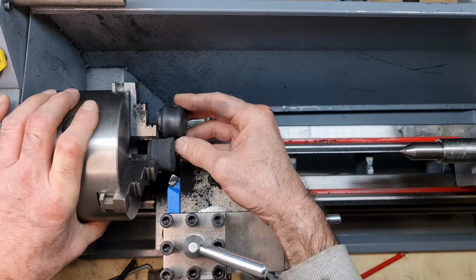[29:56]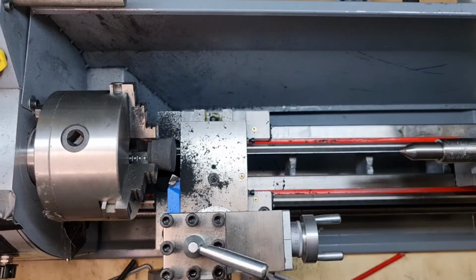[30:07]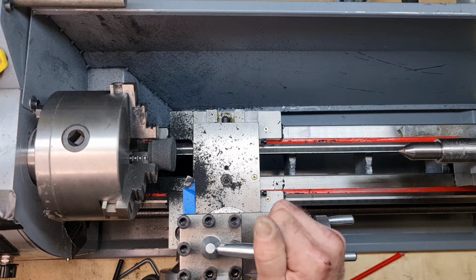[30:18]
Okay, we'll have a look at that. Yeah, I think that's definitely shorter now. Sorry, narrower. So then that's definitely narrower at the top than it is at the bottom, and I've still got that concave shape. It doesn't look it, because obviously I've got the end of that squeezed in the vise into the chuck, sorry. So what I'll do now is I think I'll just replicate the chamfer at the top there.
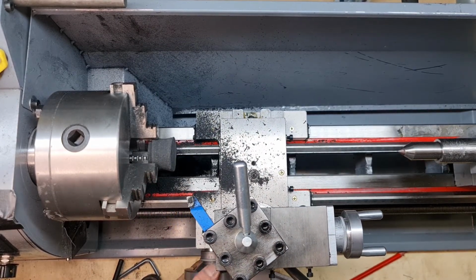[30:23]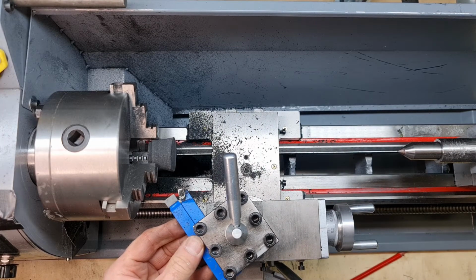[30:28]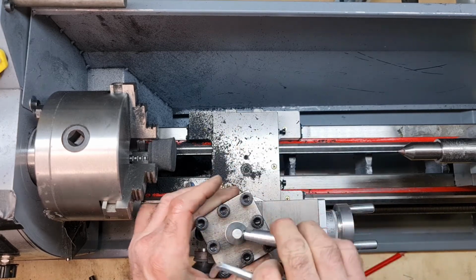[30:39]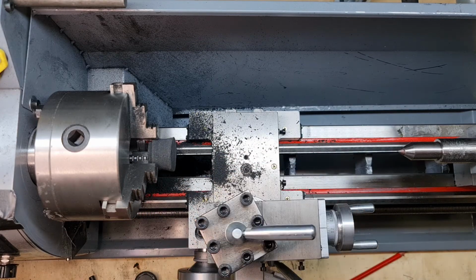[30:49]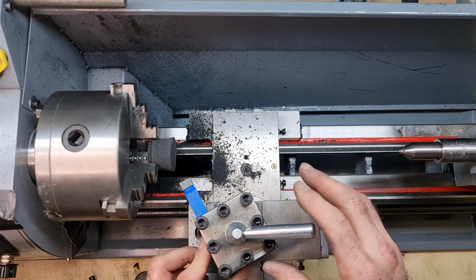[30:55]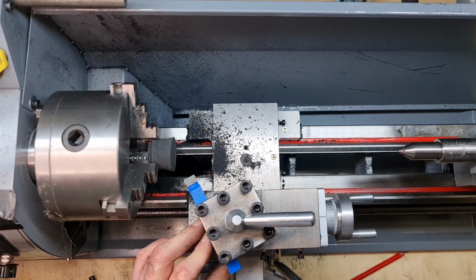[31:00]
So I'm using the same tool, actually. I didn't expect to use the same tool for all of this. I might go with that one, actually. Yeah, I think I will. I'll go with that one just to get that chamfer on there. So just take this out. Okay, put the new one in. And yeah, I'll put it in a bit shorter this time because we're well away from the chuck.
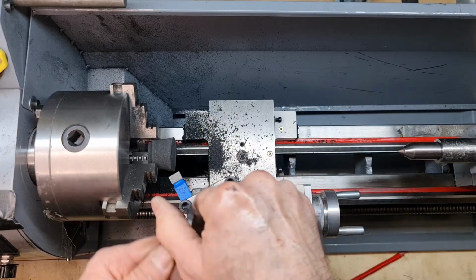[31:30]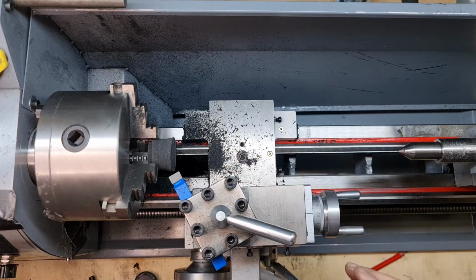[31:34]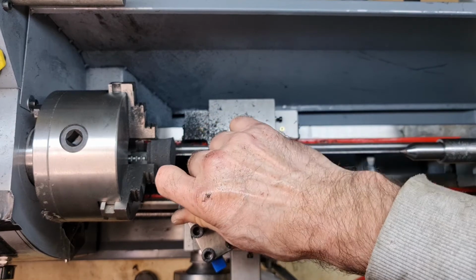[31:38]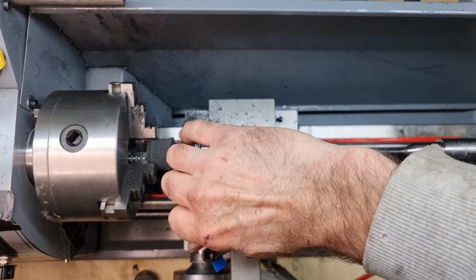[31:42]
So I did measure this other one previously with my shims, so it seems fine. Might be getting some plastic in that, some rubber in this cross slide. Anyway, that's fine. I don't have to worry about that. We'll just tighten that up. I've got a fluorescent light going in this workshop, which I need to replace. That's why there's sometimes some flickering. That's definitely on its way out. Okay, so just tighten that up. I'm going to wipe my hands because they're covered in grease and black soot. So I should vacuum up as soon as I finish this.
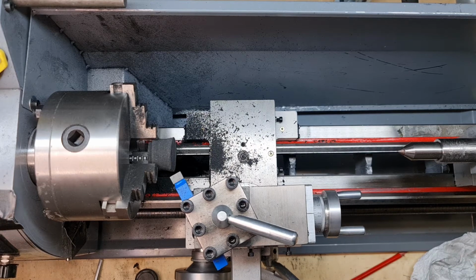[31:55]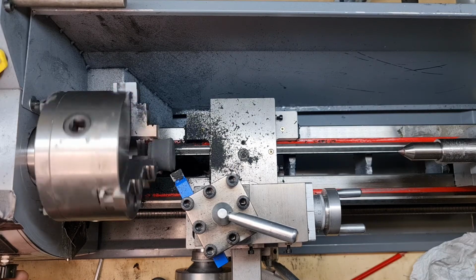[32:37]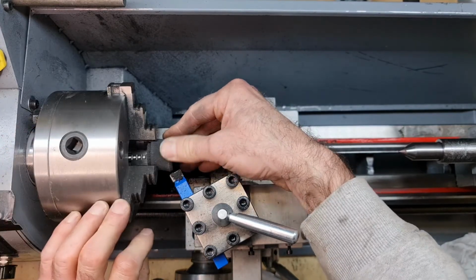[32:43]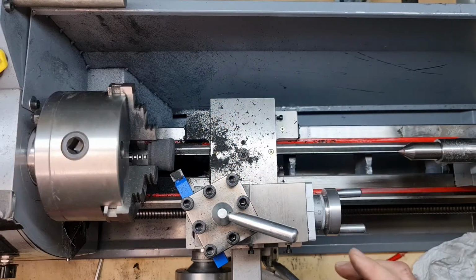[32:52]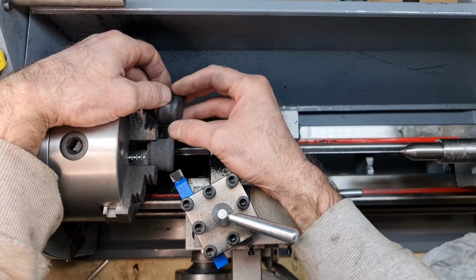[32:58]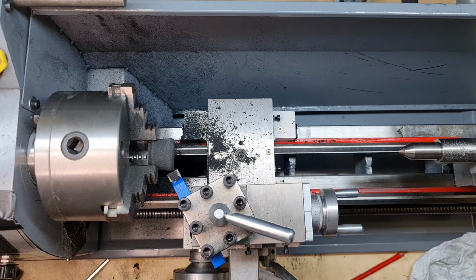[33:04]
Right, let's see if we can get a chamfer at the top then, just a very small one. I don't want to overdo this, but I do want to get it on there. Okay. Just turn that up. I had it a bit low last time, so I'll just turn that up very slightly. Going to go crossways a little bit. Dig a bit deeper. See how that looks. Okay. Doesn't matter too much about there being a lip here. Yeah, I mean, that's okay. That would do now. I'm going to go in just slightly further. Take a bit more chamfer off, just a little bit more.
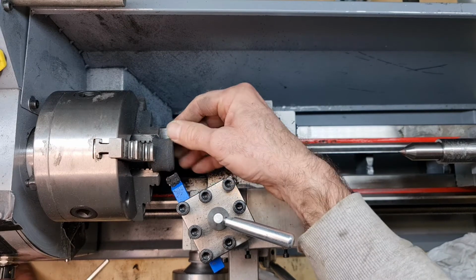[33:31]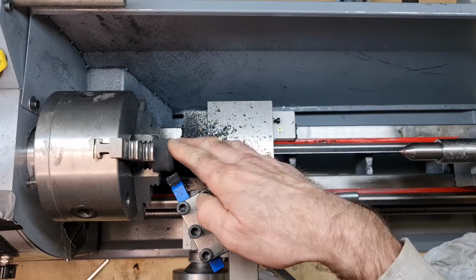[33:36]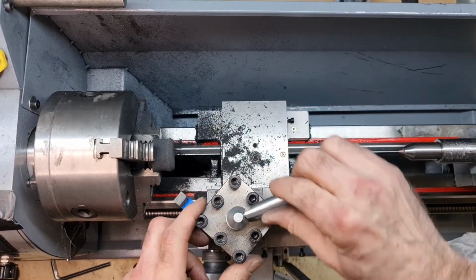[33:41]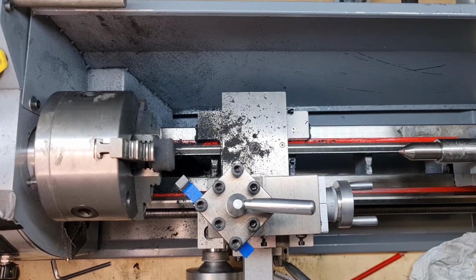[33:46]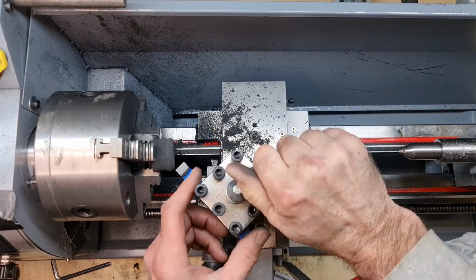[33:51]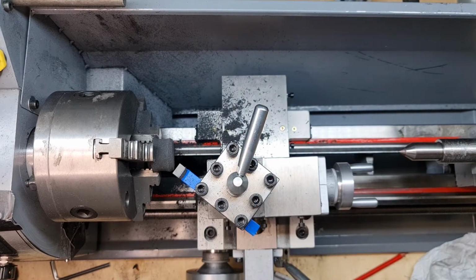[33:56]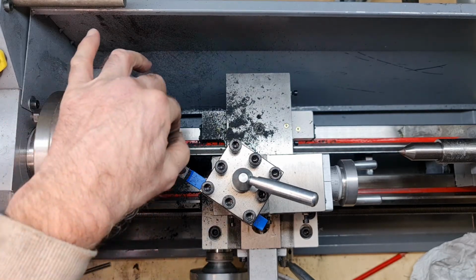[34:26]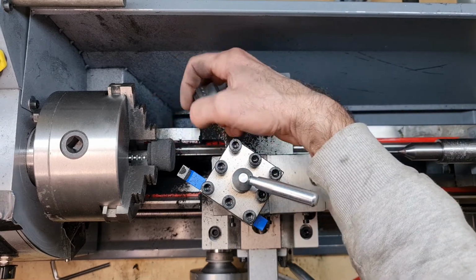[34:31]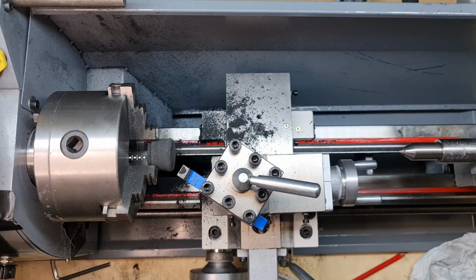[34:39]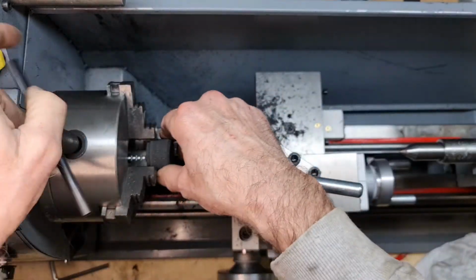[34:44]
Okay, I think, yeah, that's about right. It's the best I'm going to do. I could put the tool around here and just do a slight amount of further tapering off, but I really don't need to, and I don't want to damage anything, but I will, just because I can. So we'll just go up to here, just take that corner, that slight edge off there. See how that is? Okay. Yeah, that'll do. That's pretty close, I think. So nice and smooth, best I can do for this prototype. So we'll just switch the lathe off. We'll just get that out, see how it looks.
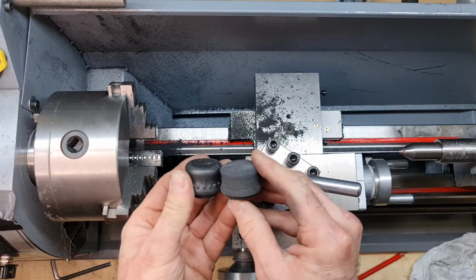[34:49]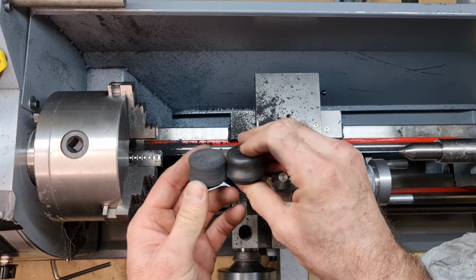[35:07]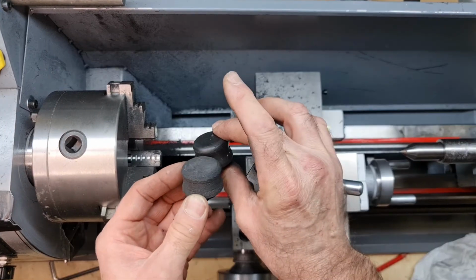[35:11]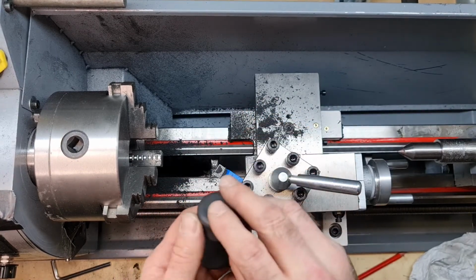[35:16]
Okay, well, I think if I really wanted to, I would smooth that up, but I'm not going to bother because it has no function of smoothing up. That just needs a little bit of cleaning up. Now we'll test how this rubber reacts. So that's the front. You can see I've got the slope there. So I'm quite happy with that. That'll do very much for a test piece. And we'll see how we go with that.
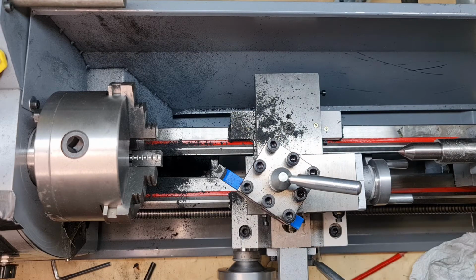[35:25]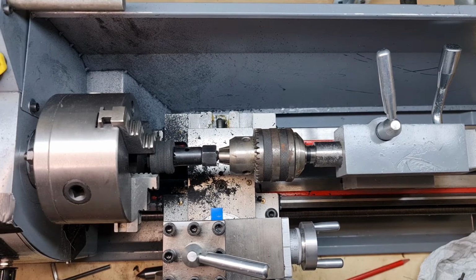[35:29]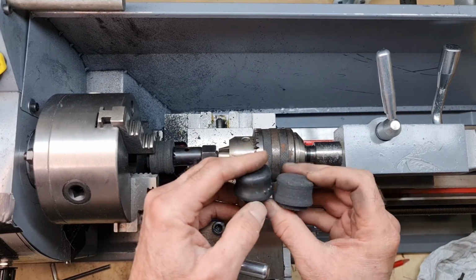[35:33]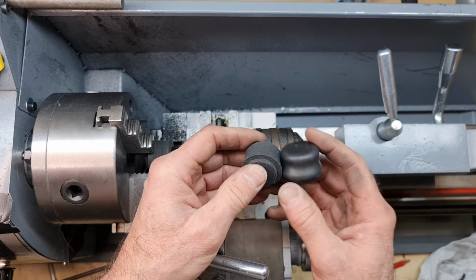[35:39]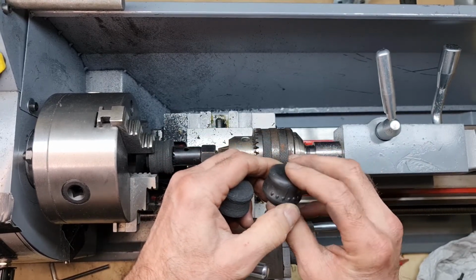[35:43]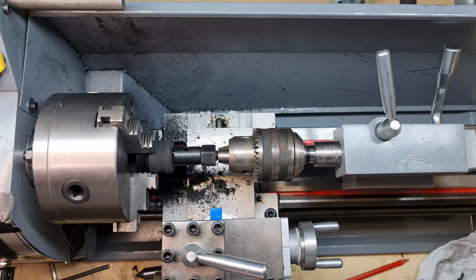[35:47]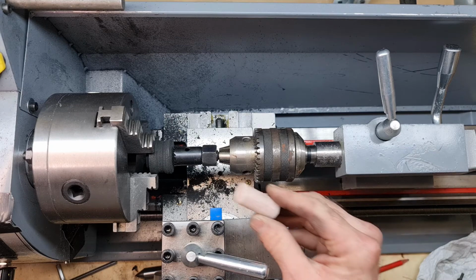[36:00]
Okay, so that's the end of this section. What I've done is I've got another prototype piece. This is the one that I'll use to do a straight replacement of this rubber stop here for the suspension system. What I'm going to do now is just experiment, and I'm going to drill a hole through another prototype I've got here, an earlier one, and then I'm going to put in, as I said at the start of the video, one of the suspension systems through there. So I've just got to cut that off and see how that reacts.
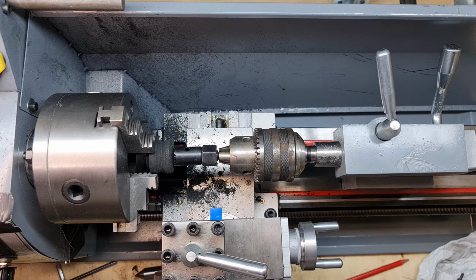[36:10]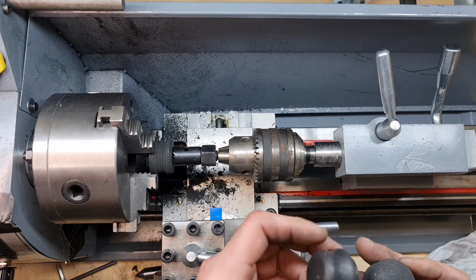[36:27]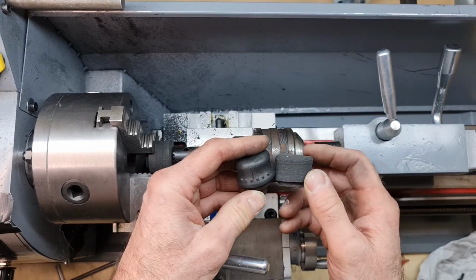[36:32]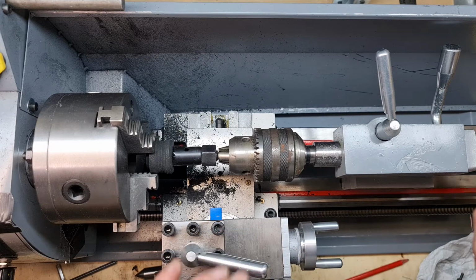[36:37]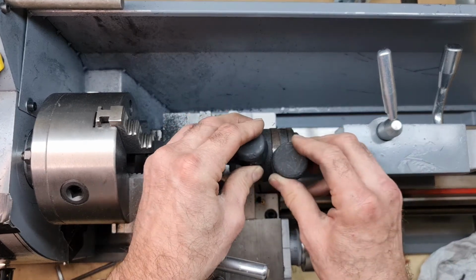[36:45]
I'm interested to see how having that soft, more pliable material in the centre of this will work on the foot, and whether it will actually be durable. Because of course I'm doing this myself, it doesn't matter if it's not durable. I'll just replace that with that, and if that's not durable, I'll 3D print another one in plastic. I don't think I'll do it in such flexible plastic as I've used previously. I'll use a harder flexible plastic, because I think that will be needing quite a hard plastic in there to be remotely durable.
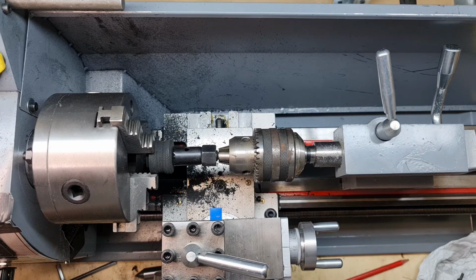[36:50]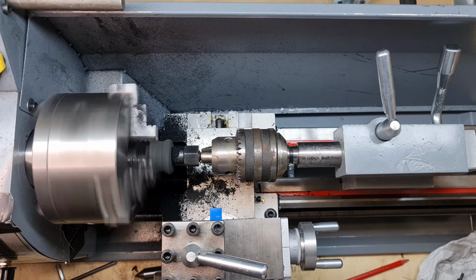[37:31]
Okay, so I've tightened the chuck up and I've measured it as best I can. So I'm going to go back up to 500 revs, just see what happens. Okay, well, fairly good at the moment. Nothing's moving apart from that initial wobble. Just trying to go smoothly again. See if I can get through the middle. Now, this piece was not as accurately cut as the one I've just done, so I'm not going to get a perfect hole through here. Oh, yeah, there we go. Actually, that came through okay. I'm pretty sure. Oh, not quite done yet, I don't think.
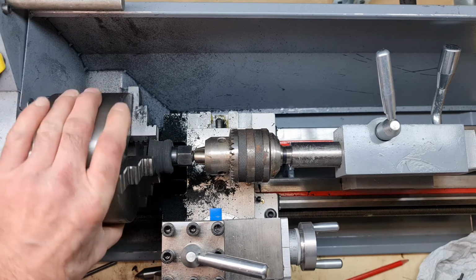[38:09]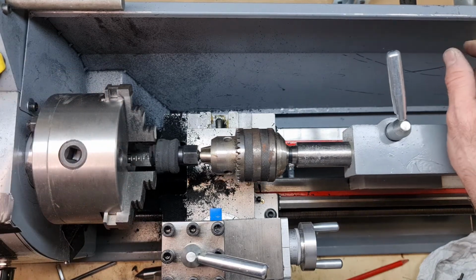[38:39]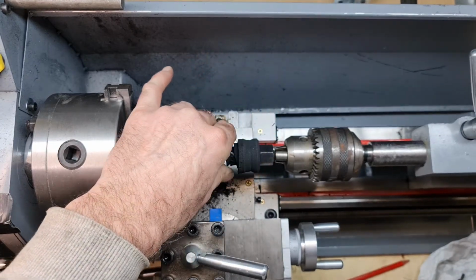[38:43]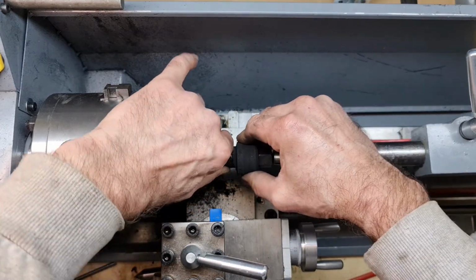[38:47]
Right, I'm going to have to. I think what's happened is the rubber is now. See what's happened. Okay, I'm just going to have to carefully do this because the rubber seems to have come through. All right, I can see the jaws of the cutter now, so that's okay. That's fine. What we'll do actually is we'll take this off. I'll just switch it off. We'll take that out of there, bring it back. Do it this way, get that out. Yeah, that didn't quite work as I'd hoped, because it's actually taken the base out.
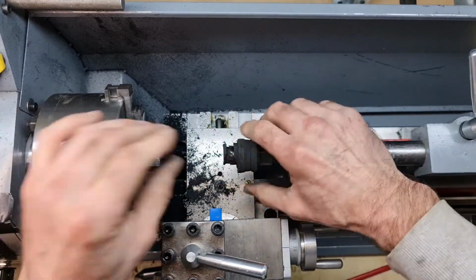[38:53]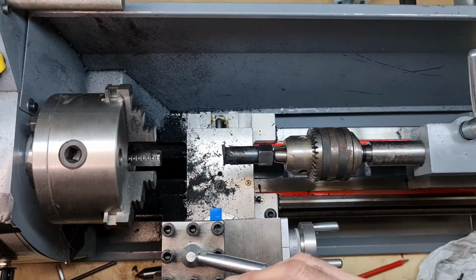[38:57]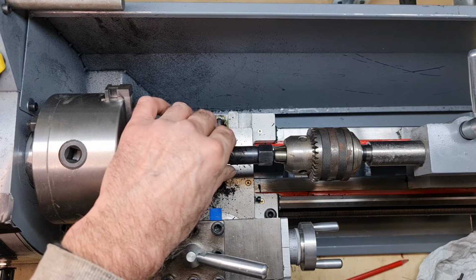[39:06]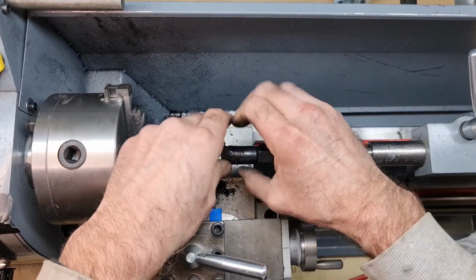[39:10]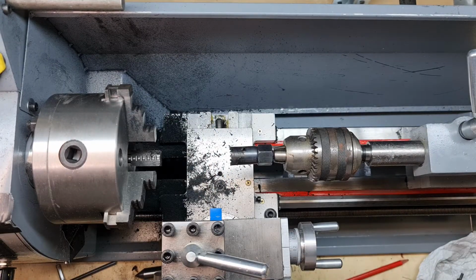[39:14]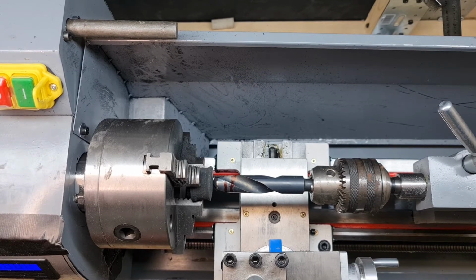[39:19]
So I'm going to have to, if I do cut this again, yeah, I've lost the base now. If I do this, I'll have to cut without going all the way through. So right, at least I've got a marker one there. Okay, so we're not going to be using the hole drill because that was a failure. We're going to drill another prototype. I'm keeping the best one, if you remember. I'm keeping that as is. I've got another prototype here that I'm just going to drill in the traditional way.
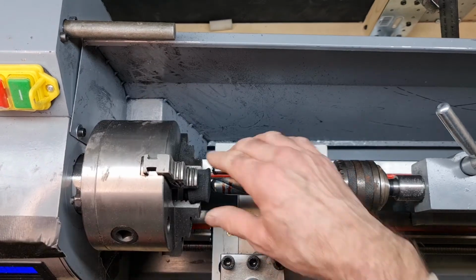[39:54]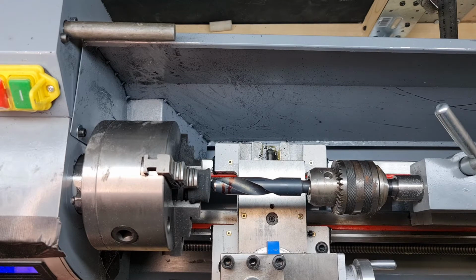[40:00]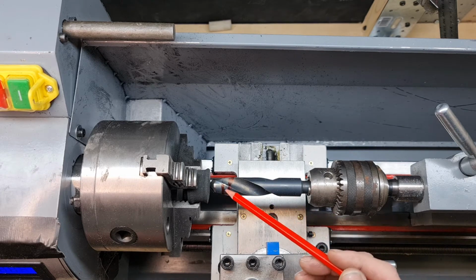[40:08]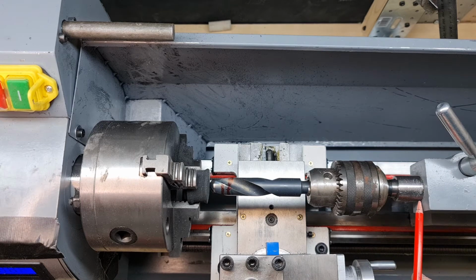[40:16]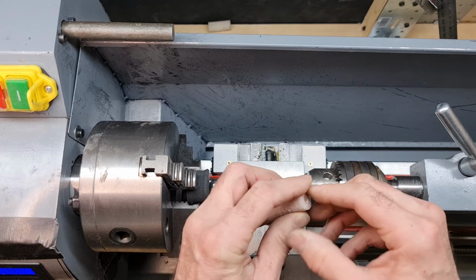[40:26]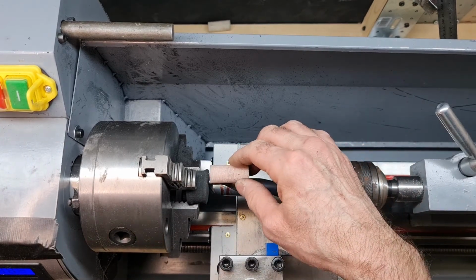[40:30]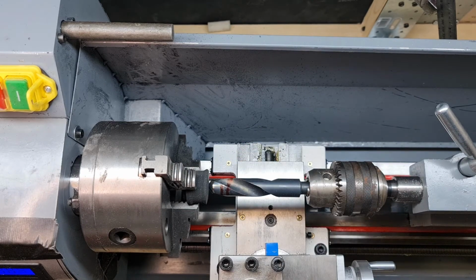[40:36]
So I've got my drill chuck out of my pillar drill, and I've got an oversized bit here which I'm going to drill into the rubber block. Now a usual thing with the block, I can't over tighten it, I can't under tighten it either, so hopefully everything's going to be okay. We're going to go in 15 mil, which I've marked out there because I can't really see the scale on this thing. So I'm just going to do it by eye, as most of the other stuff. And then we'll just cut this off. I'll just saw this because I haven't got time to part this on the lathe. And then insert that into there with some caravan glue and see how that feels.
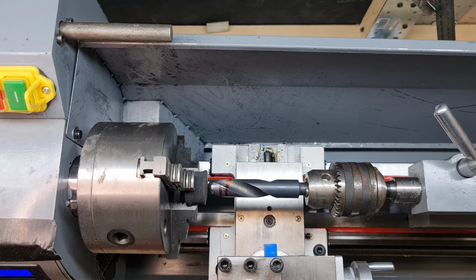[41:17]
Okay, so, by the way, my bearings were dry. I just heard a dry bearing noise. So I've just put some more oil into them. I've got some slightly thicker oil, molybdenum oil, but I'm going to get something really thick to get in there. So if anybody can recommend any oil, I was thinking maybe motorcycle chain oil or something in there, because these bearings just went dry. So I was right in my original lathe review to put in some lubrication in there, because clearly there is none and it was starting to make a dry bearing noise. Okay, so off we go again then.
Let's make sure that's down properly. Okay, that's better. There's a bit of movement in there. So I'll just gently, at 500 revs, I think, thereabouts, I'll just gently cut into this down to
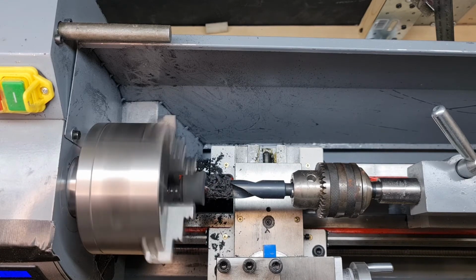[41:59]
fairly accurately 15 mil. See, I've done a bit of housekeeping and got rid of some of this dust, and I should do the same again. I don't really want that hanging around the lathe. Okay, so we're up to the mark there. That'll do, about there, I think. I don't want to go too far and get through the base again.
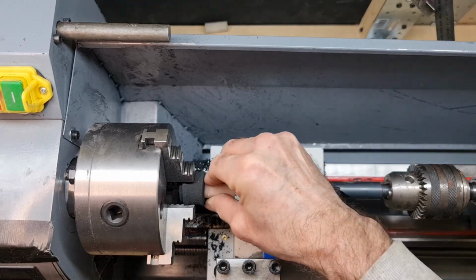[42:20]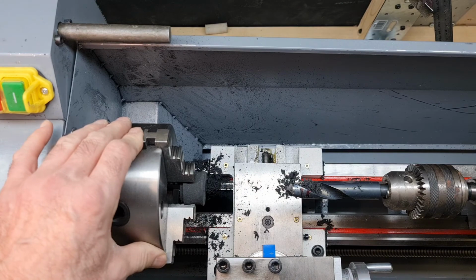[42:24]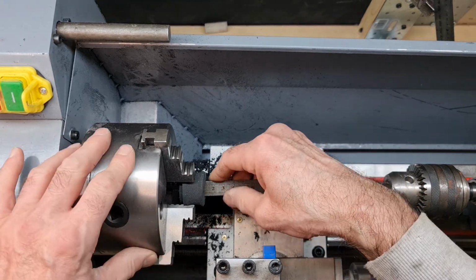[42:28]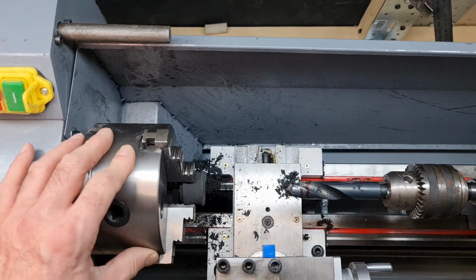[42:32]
So we'll knock that off, just bring the tool back. See how that looks. That's quite a good, nice snug fit, eh? We managed to get it. I'll just double check that. So that is, yeah, that is exactly 15 mil in there, which is what I was aiming for.
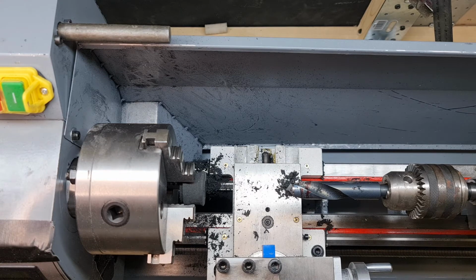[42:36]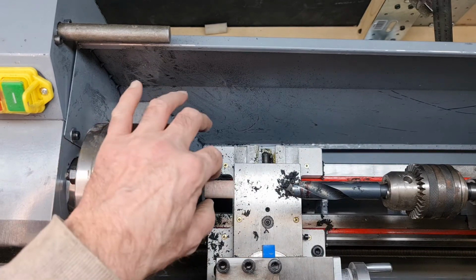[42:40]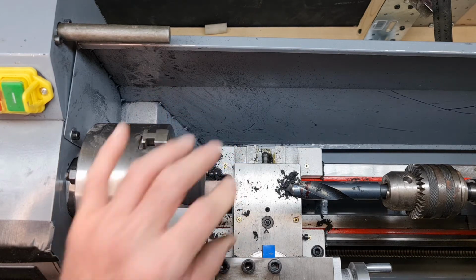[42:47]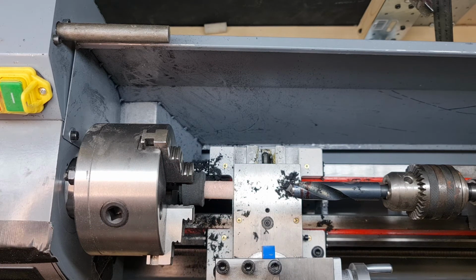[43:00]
Okay, so what we're going to do then is we'll take this out and I'll just saw this. And the way that this fits into the prosthetic foot is that it will actually be held in there at the top, because the pressure's coming through. And that'll just be held in the base because I've kept the rubber intact there. So we'll see what kind of movement I get from doing it this way. So I'll just take this out and saw it.
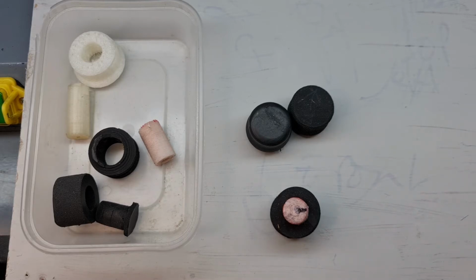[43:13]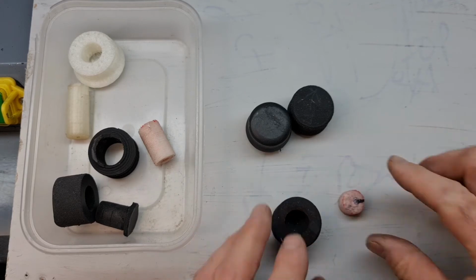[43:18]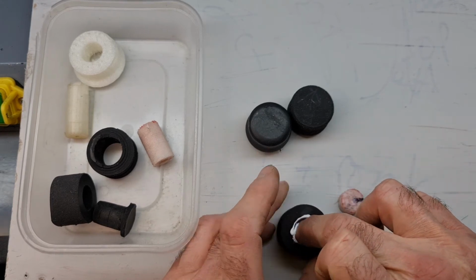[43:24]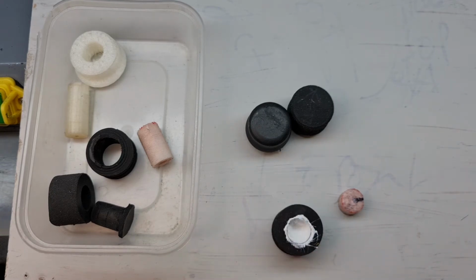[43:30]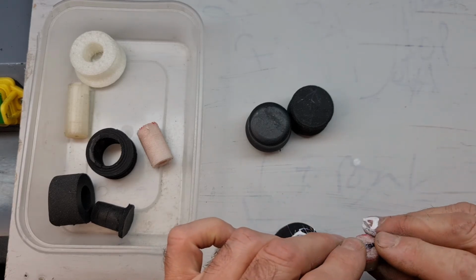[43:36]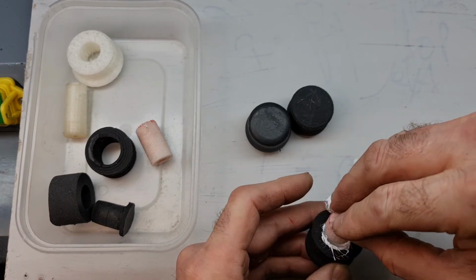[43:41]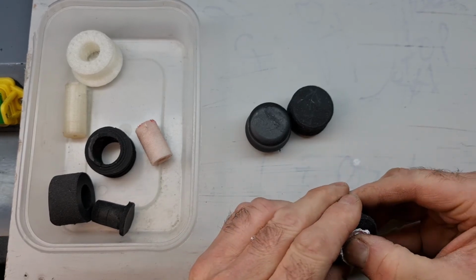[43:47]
Having just sawn off the plastic insert there that I'm going to use, I'm just going to put in a bit of the magic ingredient, which is caravan glue. I'm just going to try and help that bond in. I love caravan glue, so we're going to be taking the opportunity to use this. So hopefully, I did cut this out of chamfer and I'm going to line it up. That's it there, more or less. So we'll squeeze that in and just give that a quick wipe.
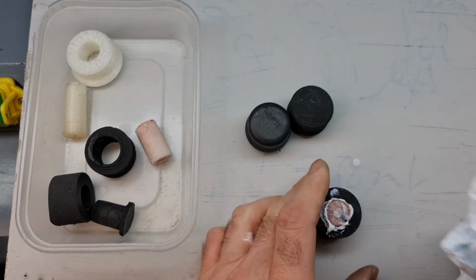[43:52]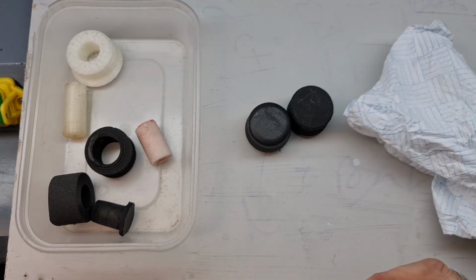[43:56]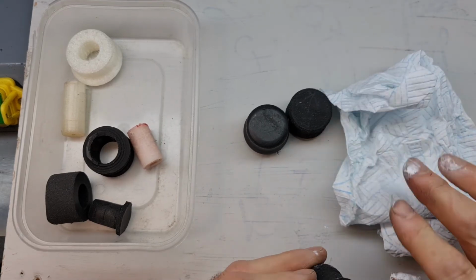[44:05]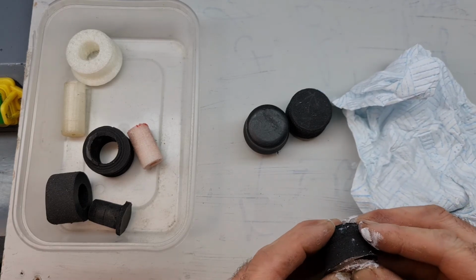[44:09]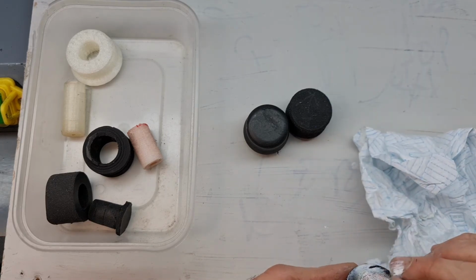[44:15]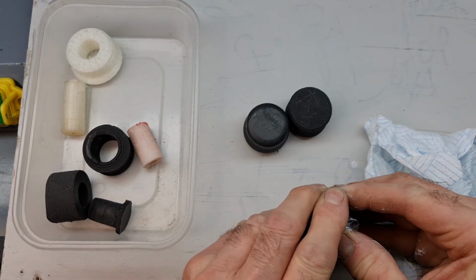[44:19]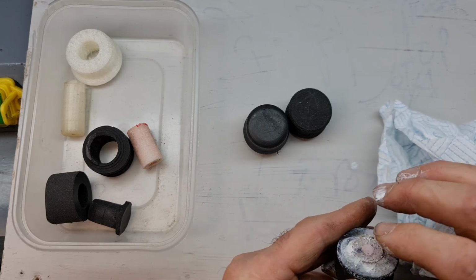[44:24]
That's it. Well, I can feel it. There we go. Not too bothered about the caravan glue being over, but I will get that off. Okay, so not quite on the... That's it. That's on the chamfer now.
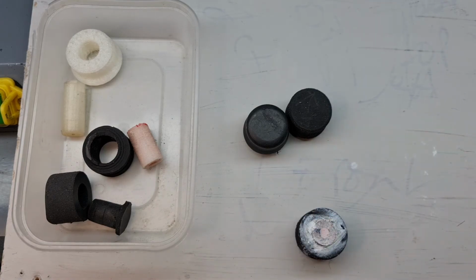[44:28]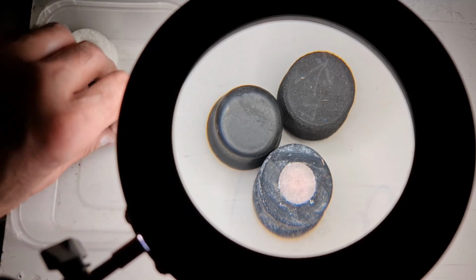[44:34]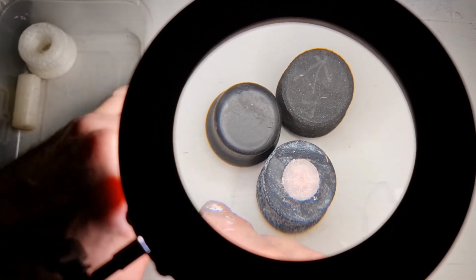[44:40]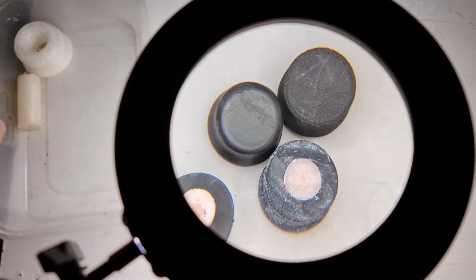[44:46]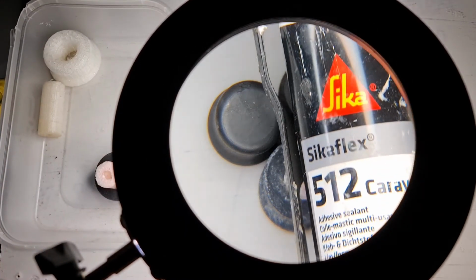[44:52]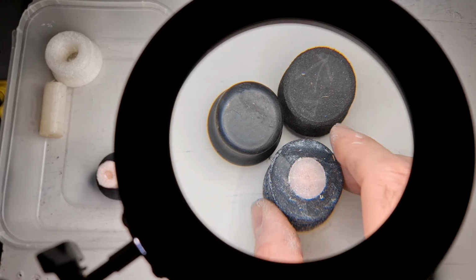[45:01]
Okay, so we've drilled and filled the suspension unit there. So we left in the end, I think we left about 10 mil or so, just above the foot there that I machined out. I've put some caravan glue in because I love caravan glue. It's great stuff. I'm not sure what that's going to do exactly. It'll certainly add a buffer down at the bottom where there's a bit of a gap from the drill that I should have shaped out, actually thinking about it, but I didn't. So I put a bit of caravan glue down there as a buffer, which may or may not work. It'll certainly stay in.
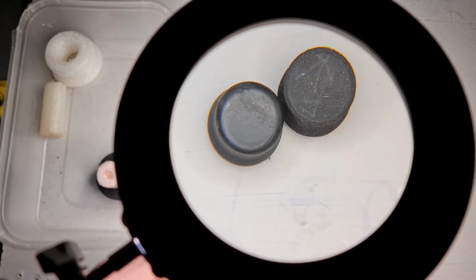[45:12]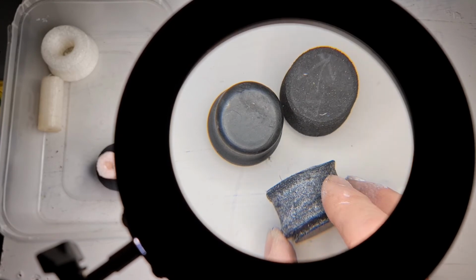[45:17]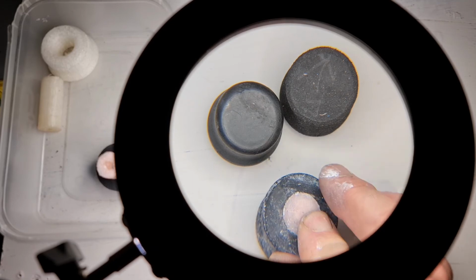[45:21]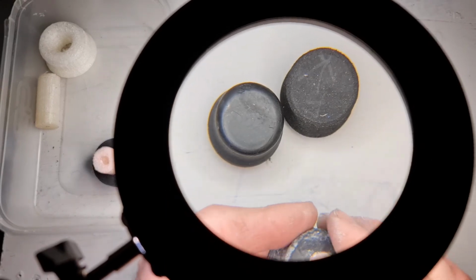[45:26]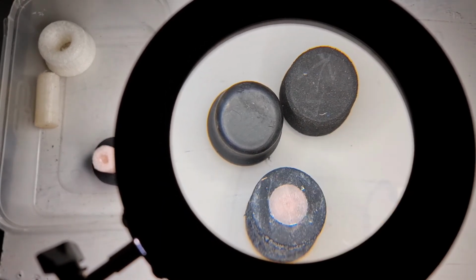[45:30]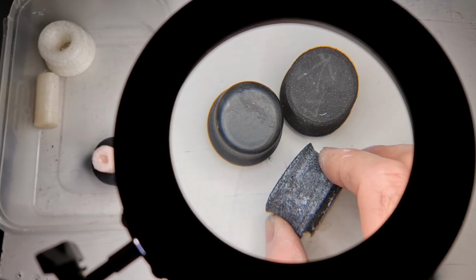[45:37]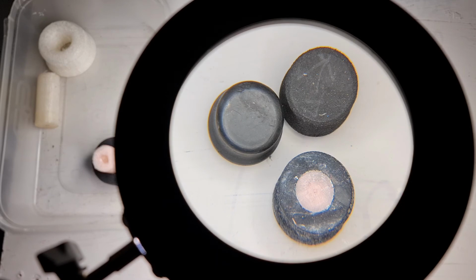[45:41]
And you can see that's slightly proud, that suspension unit now, but I'm just going to compress this overnight in a vise whilst it dries and just see what happens. So quite messy now, but it's fine. This caravan glue won't have any effect on the unit itself. This channel is all about function over form. So there we go, that's us all ready to go. So any questions, anything you think I've done wrong?
I'll just recap that on the cross slide I had a problem with that on the lathe. The cross slide, that indexing dial, I found actually later on it did actually move, so you can move it, but there's still no markings for the cross slide, so it is almost virtually useless. What else happened? Oh, I got that overrun when I was, I think I was probably about 500 or 600 revs, and then I turned it down quickly and it wouldn't stop. It just kept the chuck just kept cycling, I think at about 50 rpm.
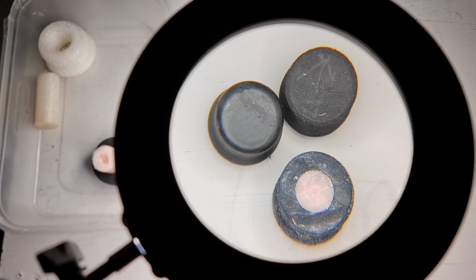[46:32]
So I found that I had to turn the motor down slower than I was to prevent that. And lastly, the bearings dried up. I just started the lathe up and heard a definite bearing noise. So I've put some more oil in just for now, liquid spray grease, Molyslip, and that's quietened everything down, but I will get something thick in there. So if you can give me a suggestion for a spray grease, because I'm not going to strip down the bearings, that's far too much work and time. I just want to get on and make things.